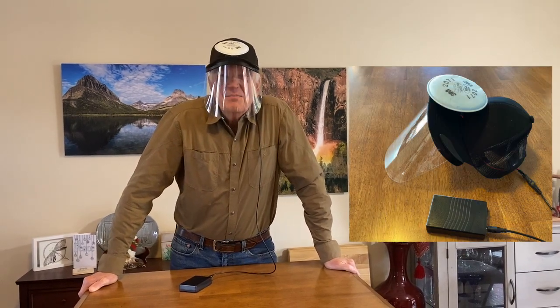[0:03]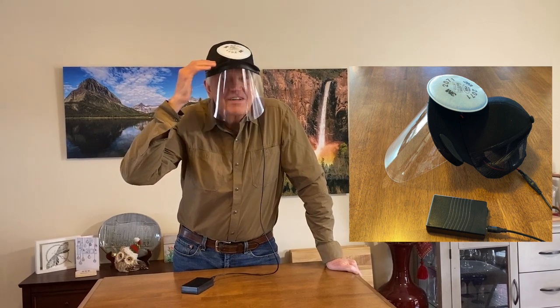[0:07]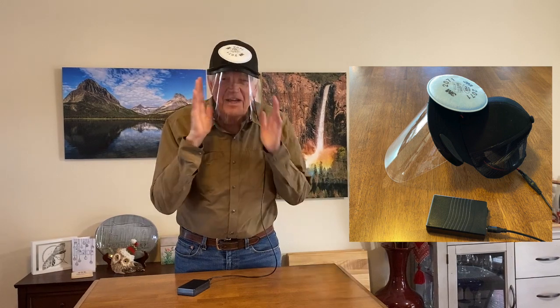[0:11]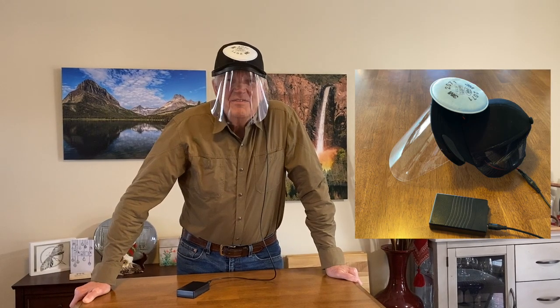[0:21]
Well, today I would like to show you a new ball cap design that includes a P95 filter, a fan that blows the air gently over your face behind a face shield and provides protection for our eyes, and also provides us with clean filtered air, hopefully to protect us more from this COVID virus that we've been fighting.
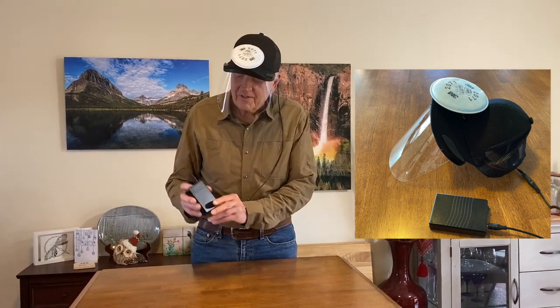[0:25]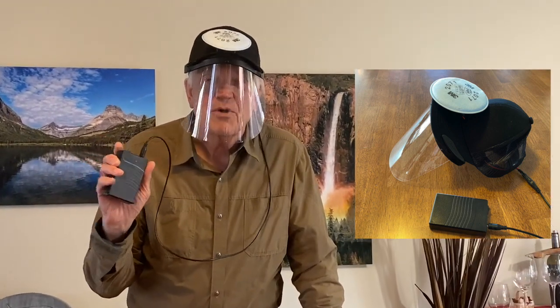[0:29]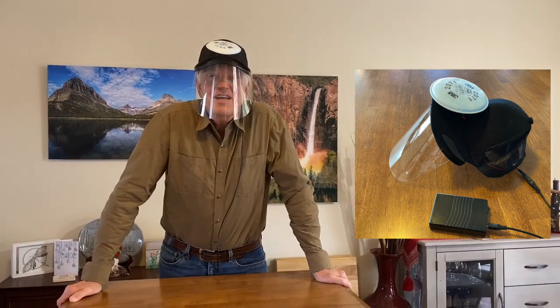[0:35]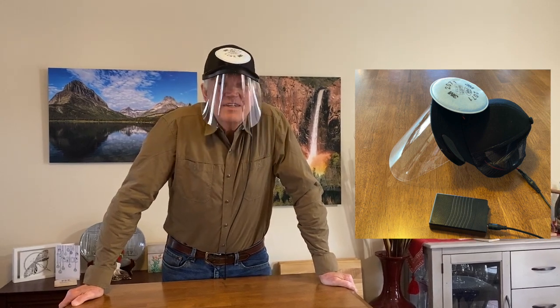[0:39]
It's also constructed with a 12-volt power pack that runs very quietly. You can fit it into your pocket and it will last all day, over 30 hours. If you'd like to learn how to construct one of these COVID caps, stay tuned.
All indications are that if we all wore a mask all the time and stayed 6 feet apart, we could probably cut down the spread of this virus. But not everybody feels comfortable wearing a mask, and you've all been in situations, I'm sure, where there are people that aren't wearing a mask, and you would probably like to be a little more protected.
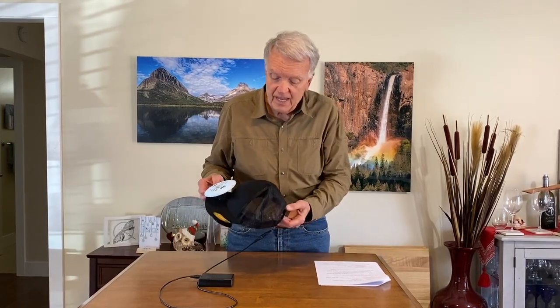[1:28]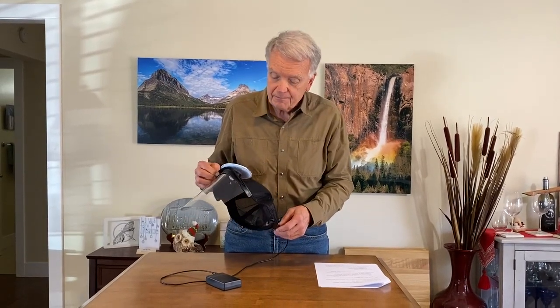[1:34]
And I think what we need is a source of clean, filtered air that can protect our breathing, and also protect our eyes, because research has shown that we can even get infected from COVID through our eyes. So what I'd like to show you today is a hat that I put together that will give us a source of clean filtered air.
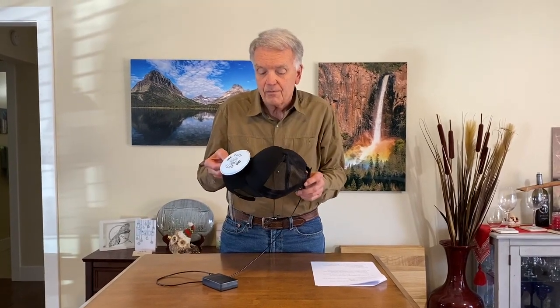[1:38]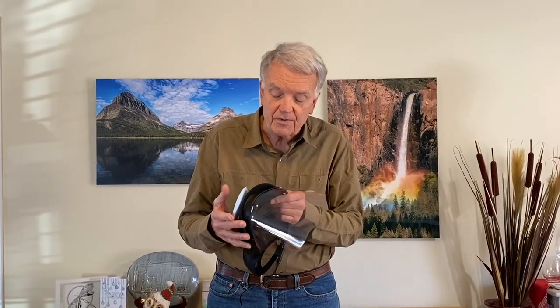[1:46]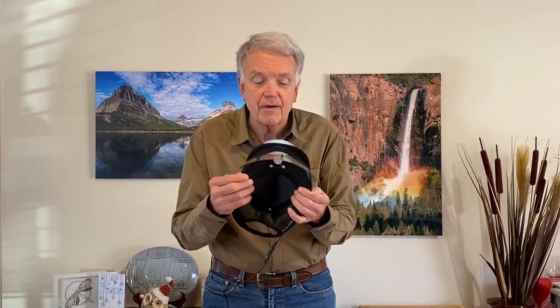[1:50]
This is a standard ball cap. Really, you could use any one to construct one of these. It's nice to have a brim on it, but all the brims are pretty much the same size, so that's fine. A hole is cut in the brim, and I'll show you how that's done later.
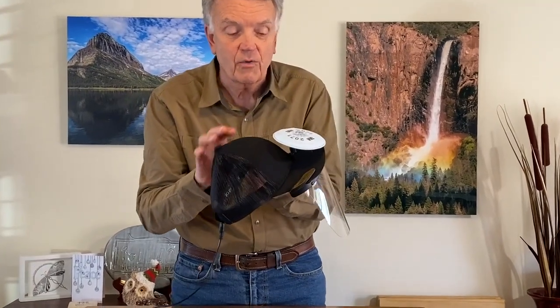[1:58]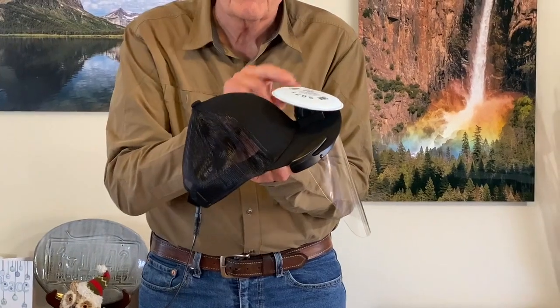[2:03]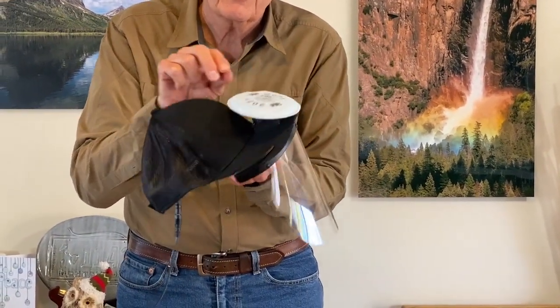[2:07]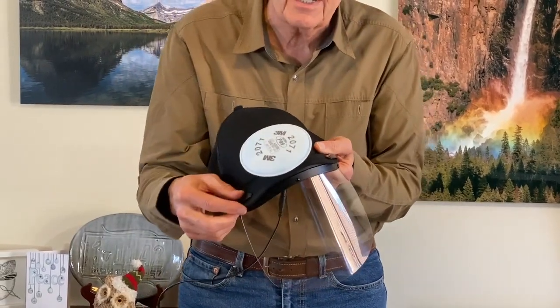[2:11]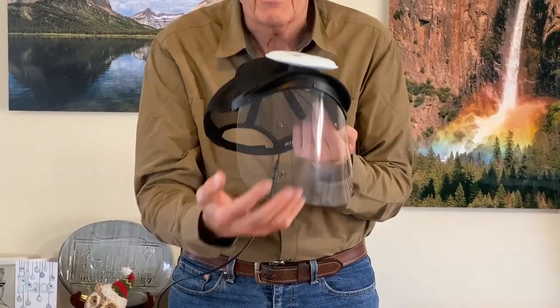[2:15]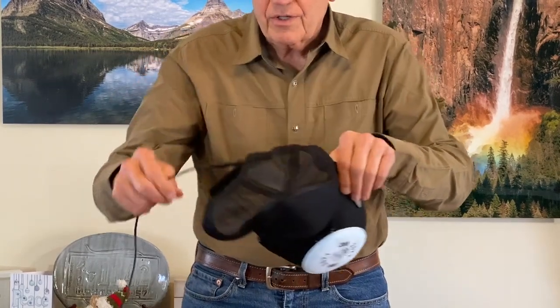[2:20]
And then on top of the brim, you can't see this right now, but I'll show you all the components in a little while, there's a little 12-volt fan, and connected to the fan is a little adapter that allows one to connect a filter. This is a 3M filter. This one is a particular P95 filter. And that then provides us with filtered air that comes down across our face. And I'll show you here.
You can put this on. This is just really light. It's just like wearing a ball cap. You really don't feel any different at all.
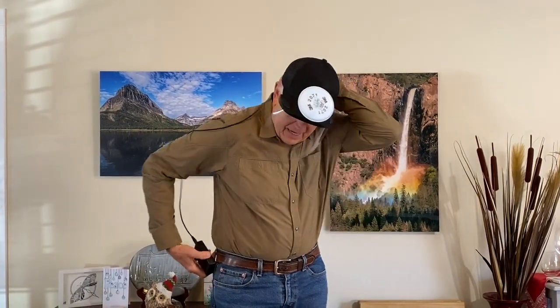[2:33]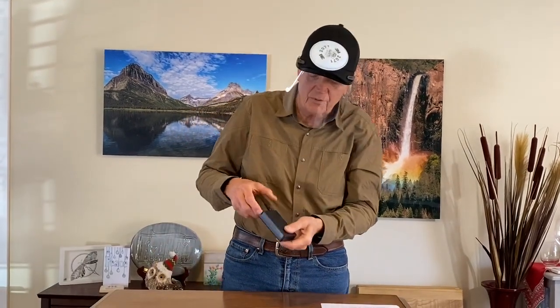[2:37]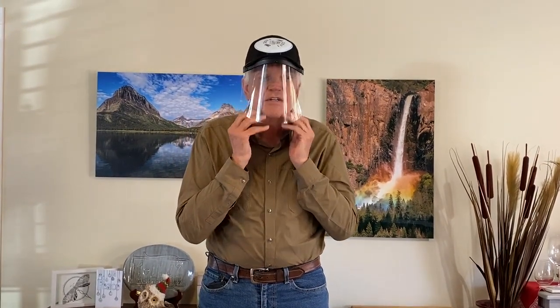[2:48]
And the back of the cap is connected to a cable, and that cable is connected to a power pack. It's a light, 12-volt power pack that fits in your pocket. And when you turn that on, you just get this source of air that comes across your face. You can feel it, and that protects your eyes as well. And you could even wear your cloth mask underneath and be even more protected.
Well, how well does this work? One of the nice things about this is if you've tried wearing a face shield with your mask or without your mask, you oftentimes will find that it starts to fog up. And with this air flowing, I have not seen any evidence of any fogging at all. I think if you went out when it was really cold outside, you'd probably have to have some heat provided to keep it from fogging. But just in an interior situation, it should be fine.
The amount of air that is provided by the fan is quite a bit. Depending on the filter, there's a couple filters available, it's twice or four times the amount of air that you need to typically breathe under a normal situation. And of course, it's not saying that there couldn't be some COVID that can get in. So I think you still need to be careful. It's not a total 100% protection. But certainly that fresh air that's flowing over your face is reassuring when you're in a situation close to other people.
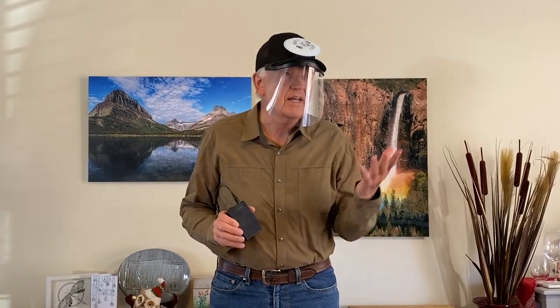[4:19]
This battery pack is commercially available as well. I'll show you where later. And this can run for 30 hours. So you can wear this mask running like this all day at your workplace or wherever you happen to be. If you're in air travel or on a bus, you're in the workplace, even teachers in the classroom, you can use this all day. And then the battery pack comes with a charger, so you can just charge it at night, and you'll be ready for your next venture out into the real world.
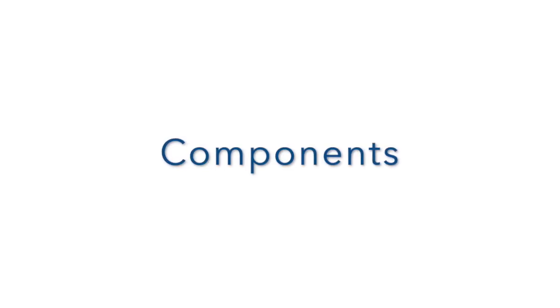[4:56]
Okay, in the next part of the video, I'm going to show you all of the components that go into making one of these. And then if you want to, I'll show you how the construction is actually done.
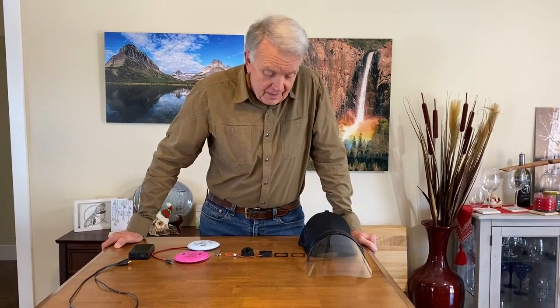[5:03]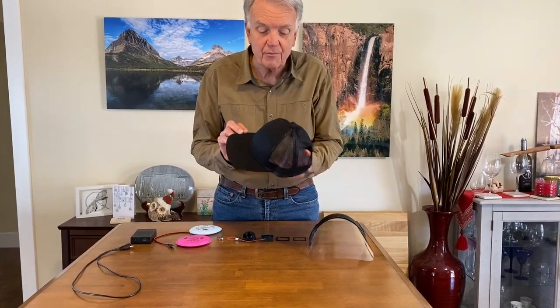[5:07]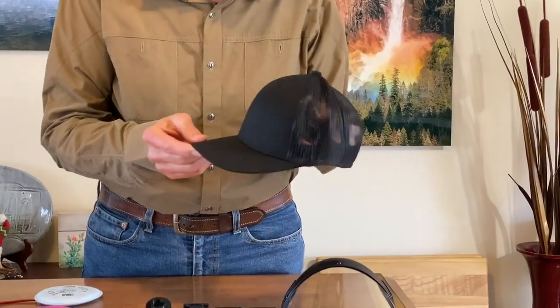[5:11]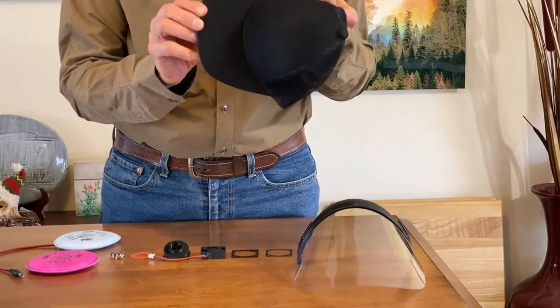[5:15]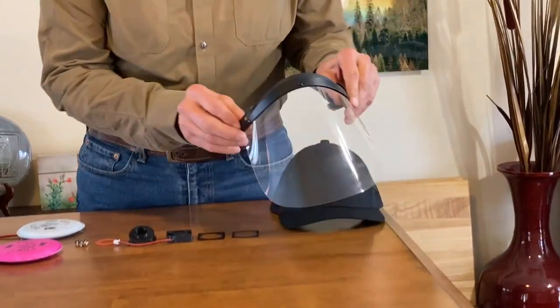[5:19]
Okay, let me show you all the components that are used to make this COVID cap. Of course, you need a ball cap of some sort. Doesn't make any difference, it can be in color, as long as it's got a brim on it, that's the standard brim, it should work fine. I do have a face shield.
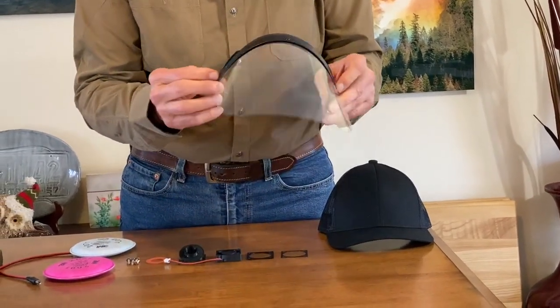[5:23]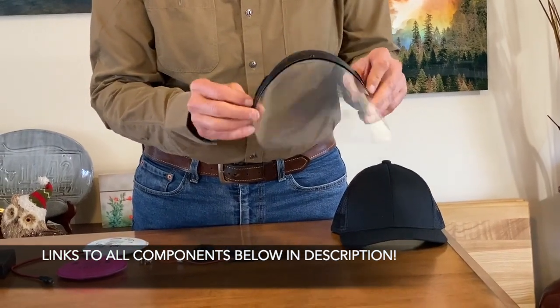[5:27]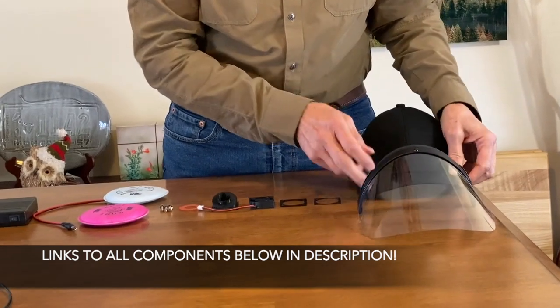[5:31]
This is a face shield that's by CapLens. It's commercially available, but there are a lot of face shields out there you could use, but this one seems to slide on the rim of the cap really nicely. And then
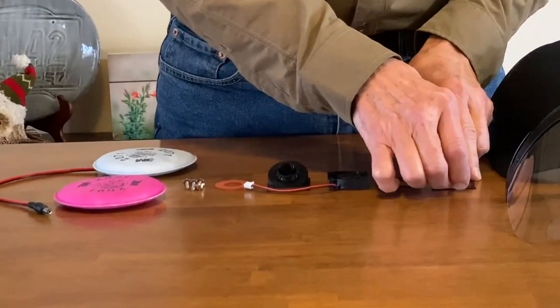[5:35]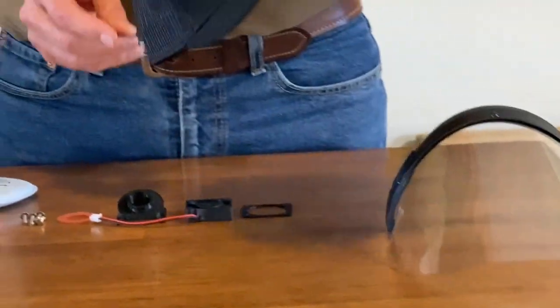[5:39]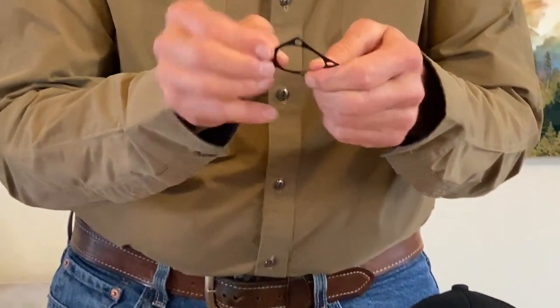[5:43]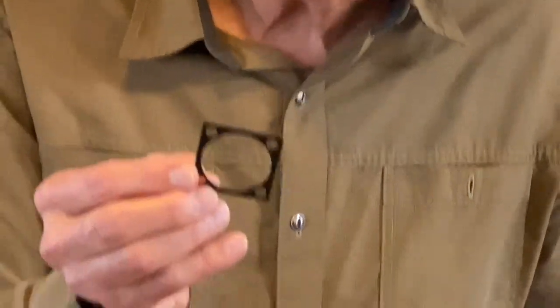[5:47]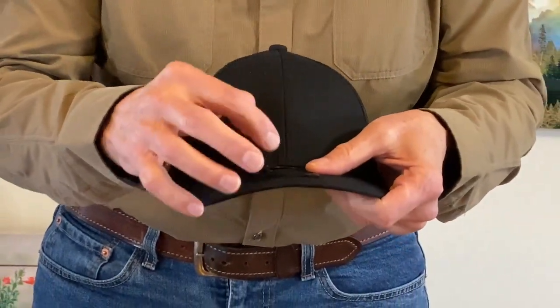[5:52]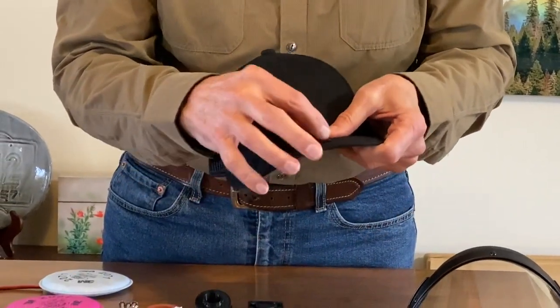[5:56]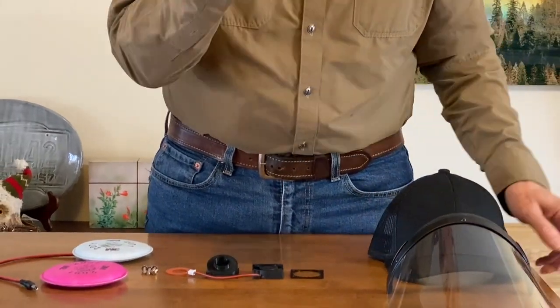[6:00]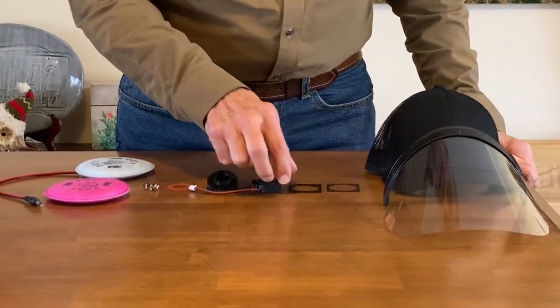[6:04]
I have to cut a hole in the cap. So with the 3D printer, I just printed up a little flexible template that I can put on and hold on the top of the cap to mark where I want to cut a hole in the cap and where I want to punch some holes for the screws. It's not needed, but it just makes it a little bit more accurate and easy to do.
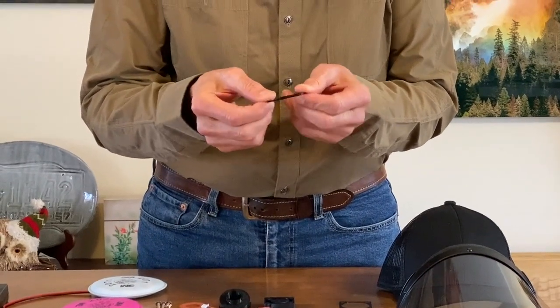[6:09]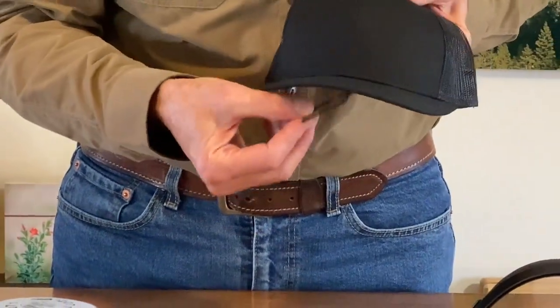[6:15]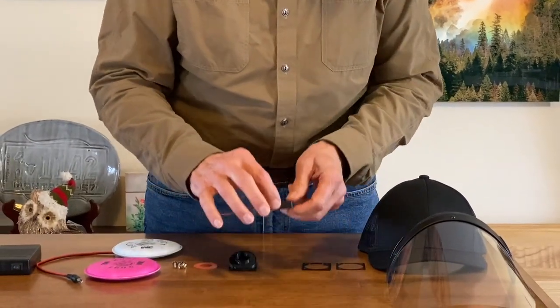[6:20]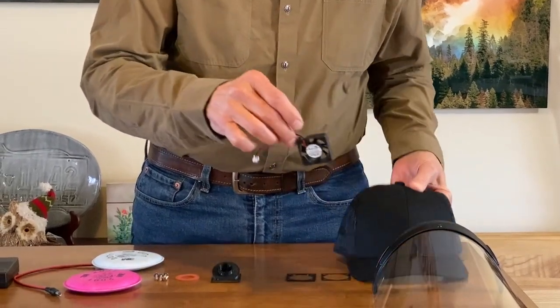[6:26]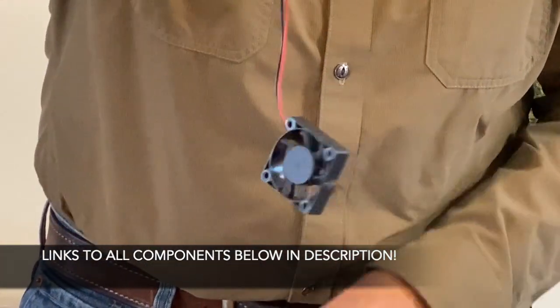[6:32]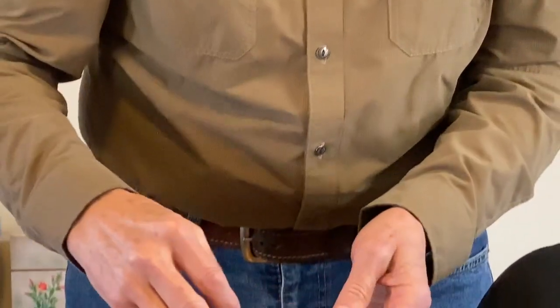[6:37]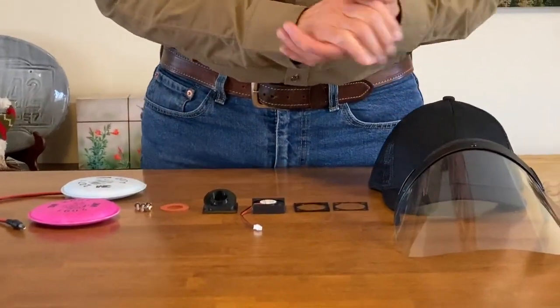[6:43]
And then this piece here is also printed on a 3D printer. And this goes on the bottom of the lid, where the hole is. And then on top of the lid, top of the brim, goes this fan. This is a fan that you can buy on Amazon. It's a little 12-volt fan and delivers enough air so that even with the filter, which slows down the air, it delivers 2 to 4 times the amount of air that you need to breathe normally.
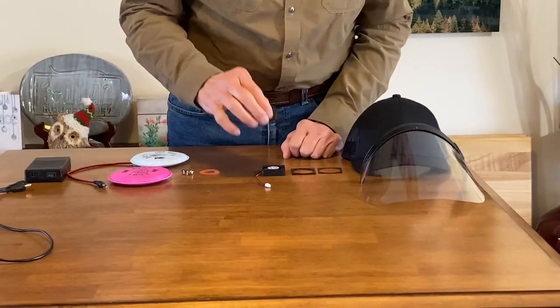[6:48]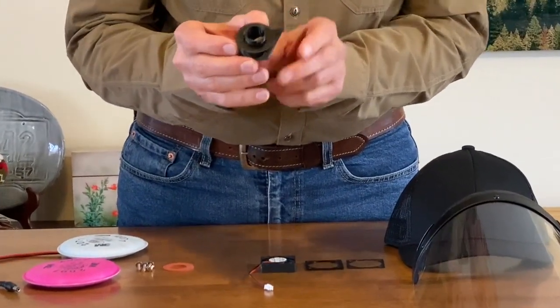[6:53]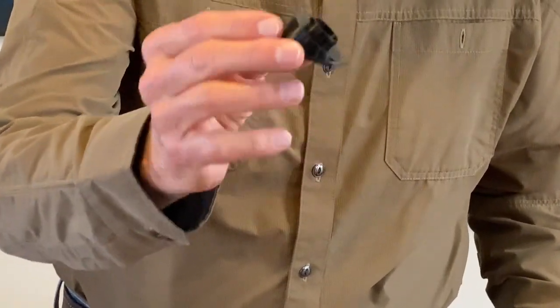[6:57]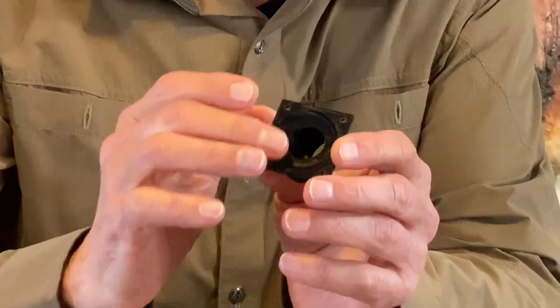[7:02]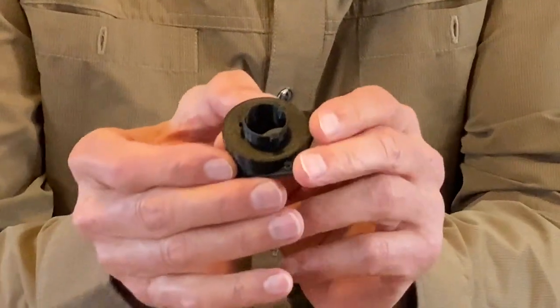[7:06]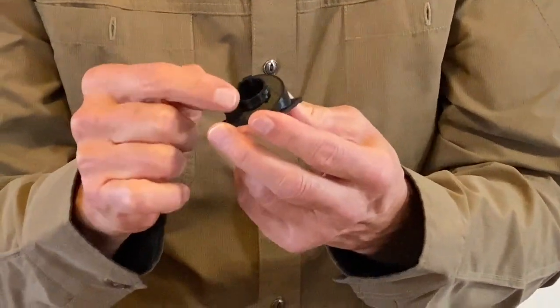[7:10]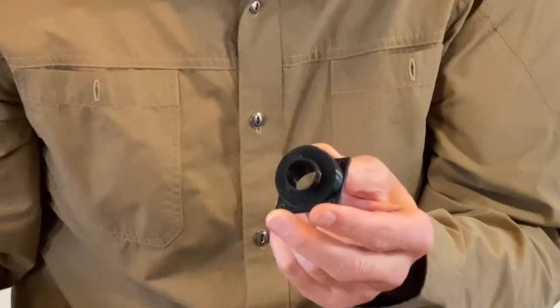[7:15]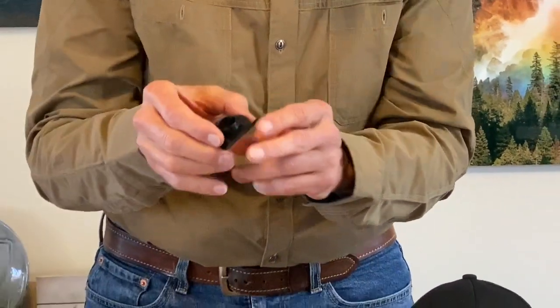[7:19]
And then on top of the fan, there's an adapter. This is a little adapter that I printed up on the 3D printer. There's where the air comes out. And this top here is where the filter attaches. I went on to one of the 3M masks and copied the location of the little tabs that they have on there that allows the filter to attach to the adapter.
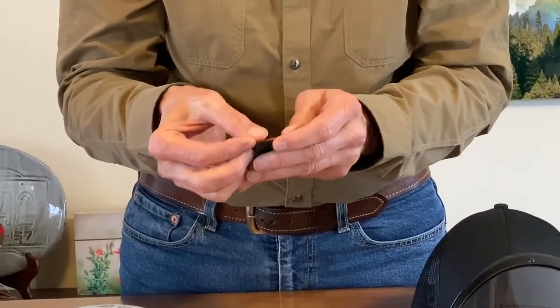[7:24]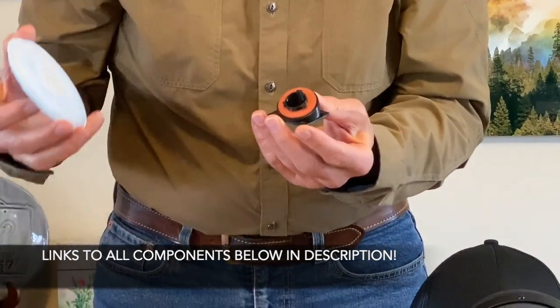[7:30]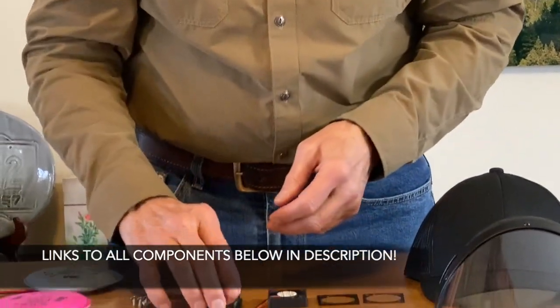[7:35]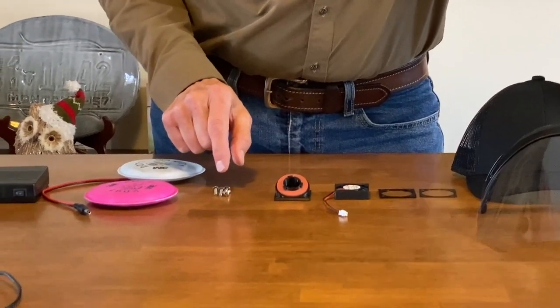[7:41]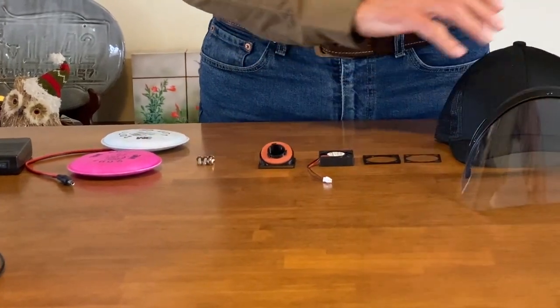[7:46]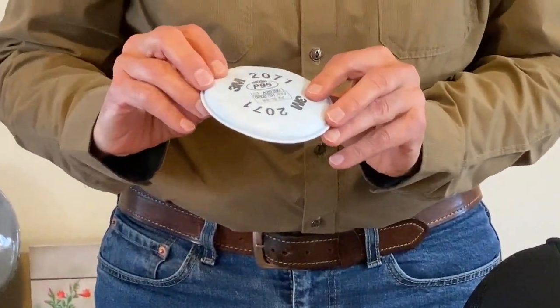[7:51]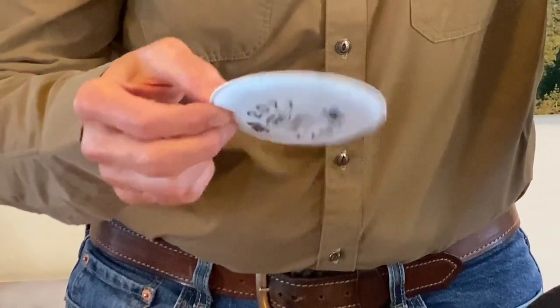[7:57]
And then there's a little gasket that 3M makes also that you can buy on Amazon. And that allows either of these two filters to attach, just slips on and turns. And of course, then there are 3 or 4 screws. These are 6-32 screws, 3/4 inch long, and they will hold all these things together on the cap. The two filters that I've found, 3M may have some additional ones, are very lightweight, less than an ounce, hardly anything at all.
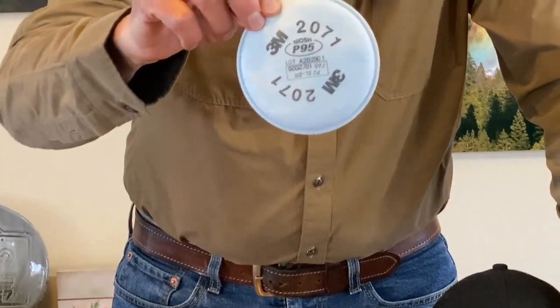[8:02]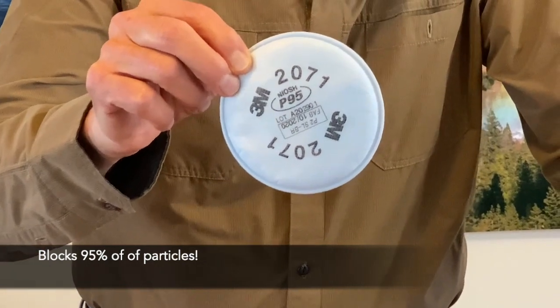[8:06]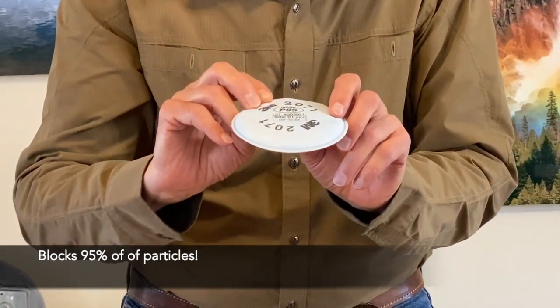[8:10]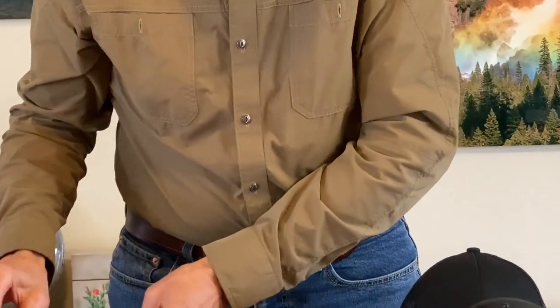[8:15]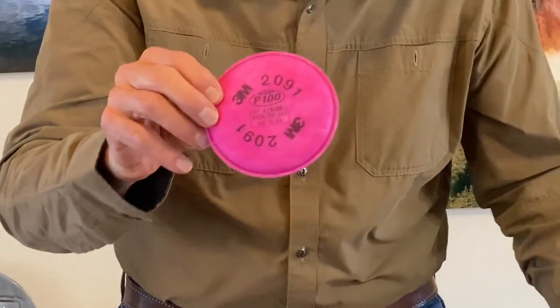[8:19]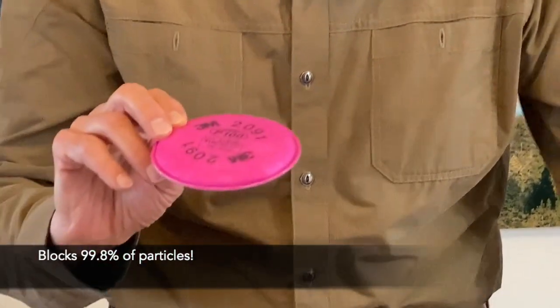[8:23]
And this is a P95. It filters 0.3 micron particles. 95% of those are filtered out. And here's another option in a different color, which is the P100. And that blocks 99%, 99.8% perhaps of the particles.
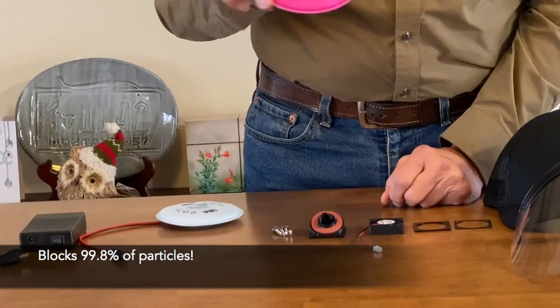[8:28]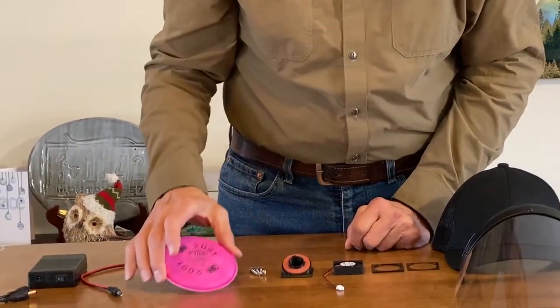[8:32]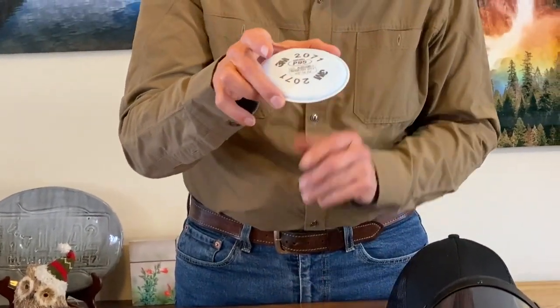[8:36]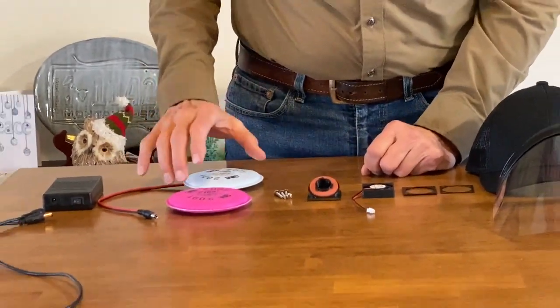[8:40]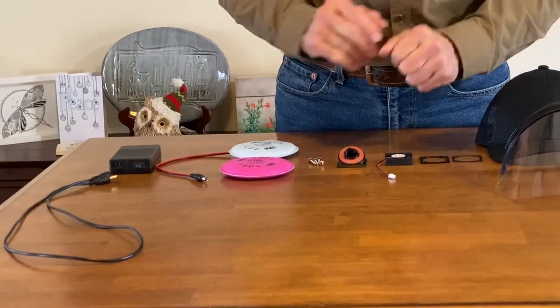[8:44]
But this one doesn't flow as much. This only gives us about twice the amount of air that we breathe with this setup. This gives about 4 times the amount of air that we breathe. So I don't know exactly which one would be the best, but until we do, you maybe just find that you like one color more than the other.
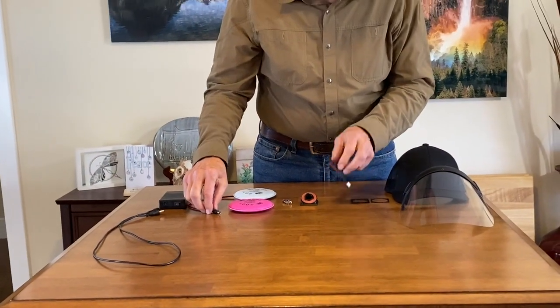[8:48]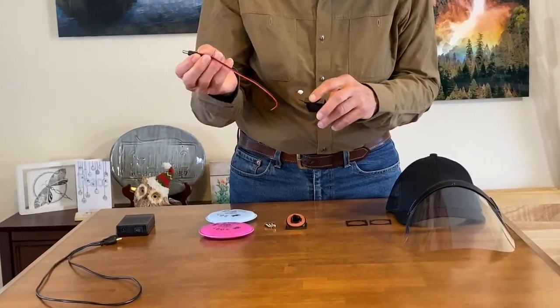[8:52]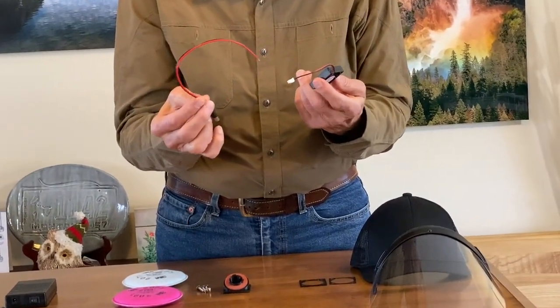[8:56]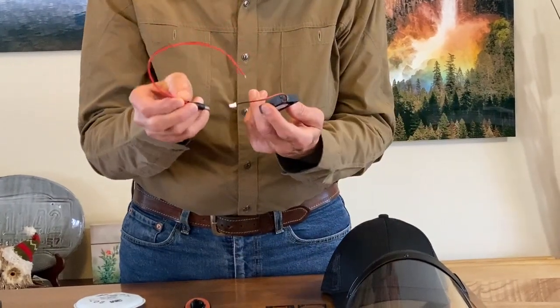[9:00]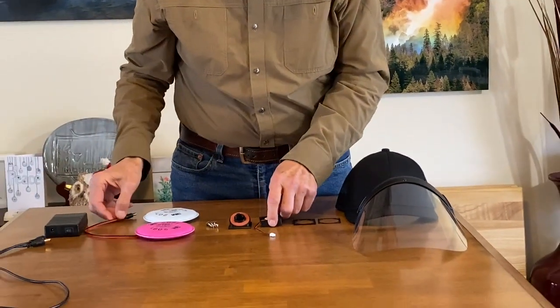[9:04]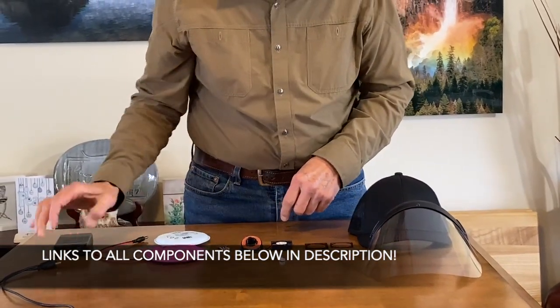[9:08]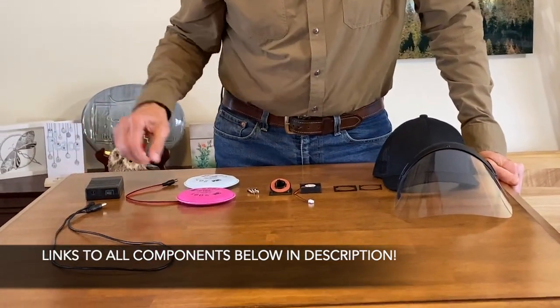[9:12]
And then, of course, the fan has to be connected to the power somehow. I'll show you in the next part of the video how I do this. But this plug is routed in the cap, and then I just solder those wires together. And then, of course, the battery pack that we talked about already, and a 3-foot cable that allows us to connect that to the plug at the back of the hat.
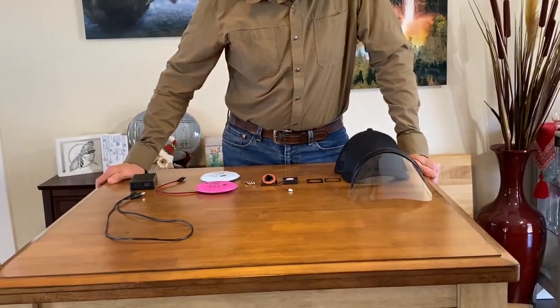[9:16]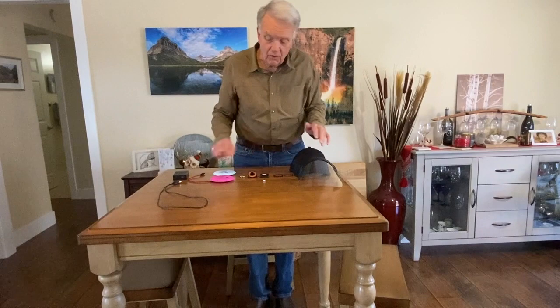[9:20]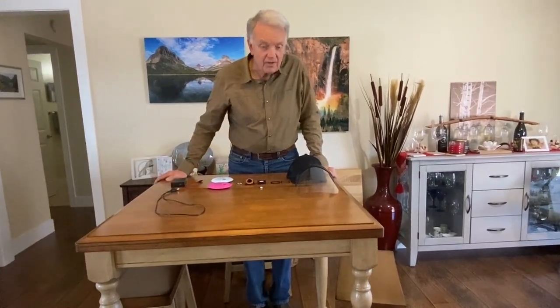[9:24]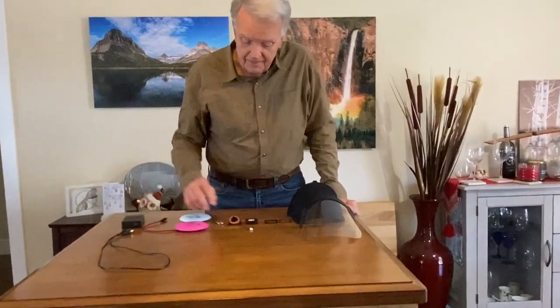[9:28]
Okay, in the next part of the video, I'll show you how I cut the hole in the cap and line it up and put everything together and solder the wires in case you want to do some of that.
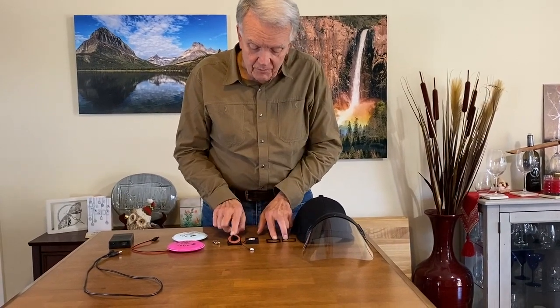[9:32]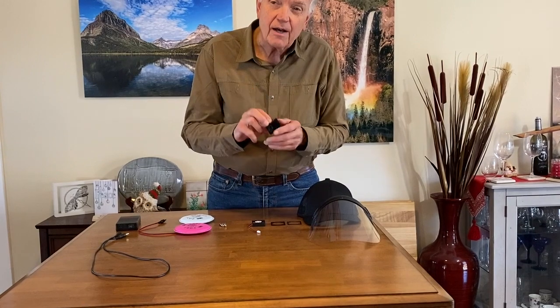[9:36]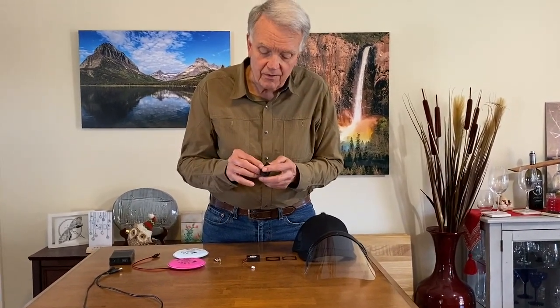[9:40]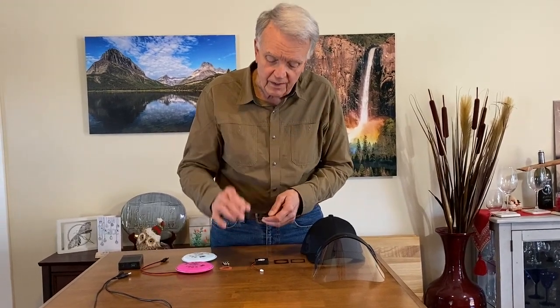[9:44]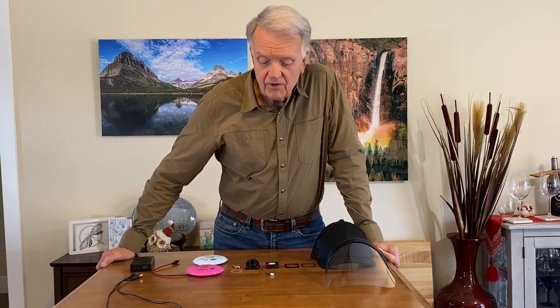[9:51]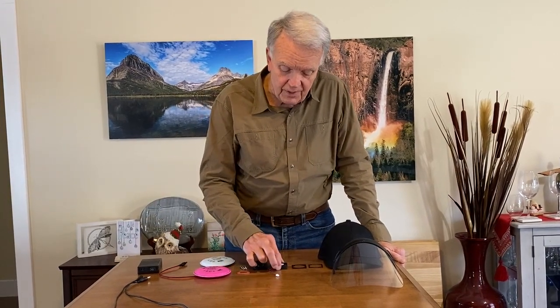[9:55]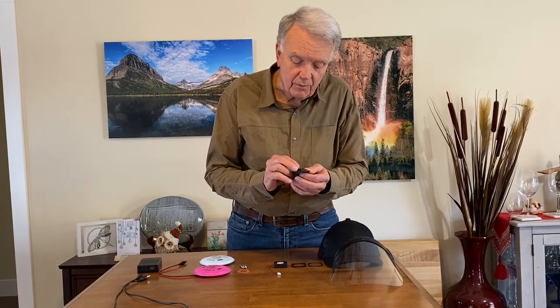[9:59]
These three items right here are made on the 3D printer, and if you haven't seen a 3D printer working before, I'll show you an example when I'm printing one of these up so you can see what it's like. You may know somebody that has a 3D printer, or there may be some place where you can have things printed up. I'm not sure. I'm new to 3D printing myself, so I don't know everything that's available.
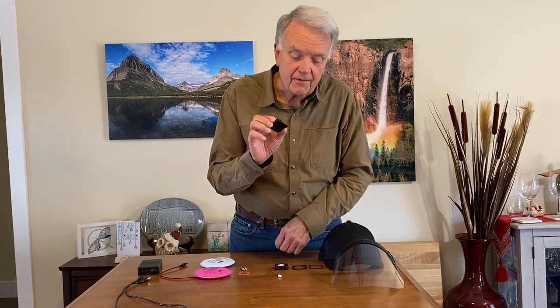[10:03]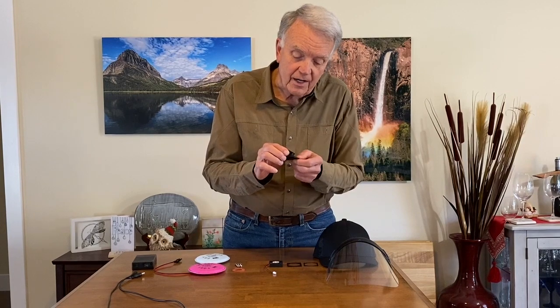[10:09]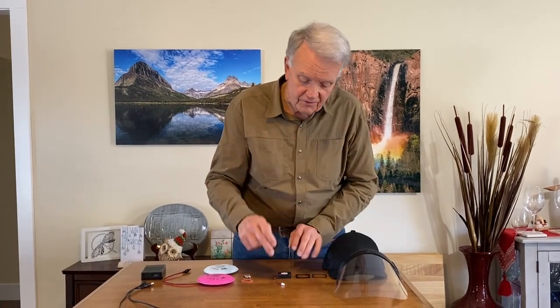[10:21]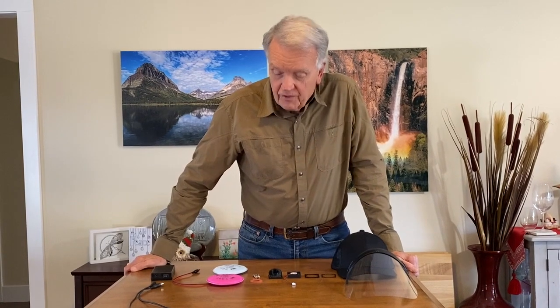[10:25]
But if you've been doing some 3D printing or you know somebody that does it, they will know what I mean when I say there is an STL file, and I can post the STL file in the description below, so that if you want to print up one of these components, or if you want to have somebody print up those components, you can use that STL file to do that.
Okay, in the next part of the video, then I'll show you how all these are put together to make the cap.
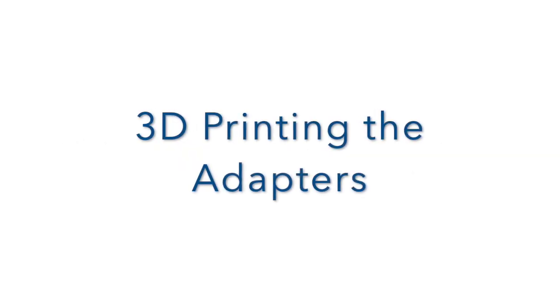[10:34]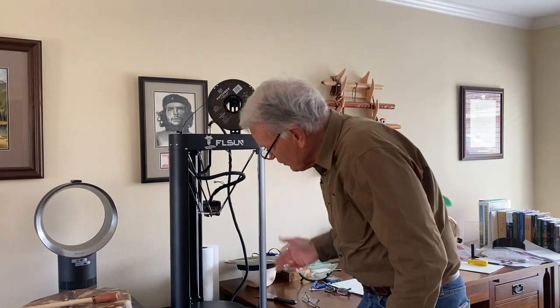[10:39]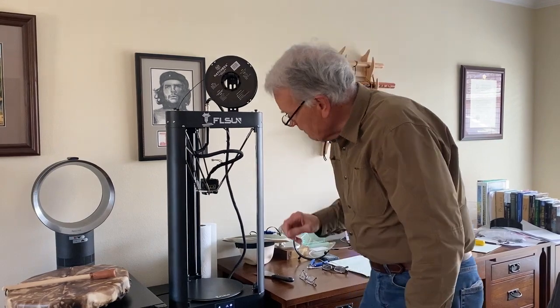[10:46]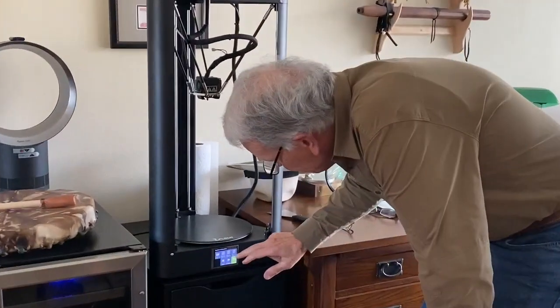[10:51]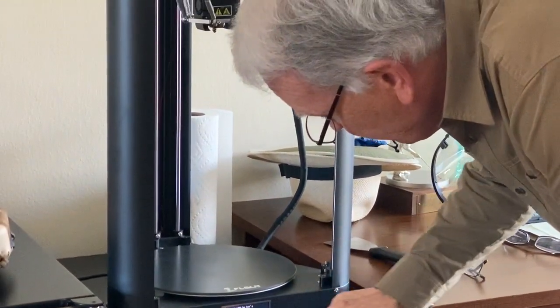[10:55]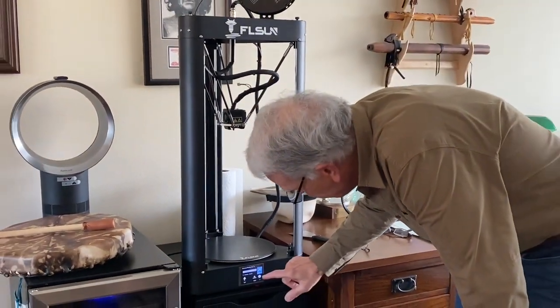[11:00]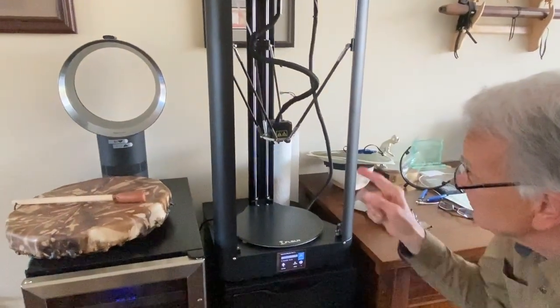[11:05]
Okay, let me show you just a short amount here of one. This is a 3D printer that I just bought within the last year. I'll just show you a little bit about this if you've never seen one of these. And I'll just start. I'm going to print up one more of these adapters. And so I'll let this heat up. This is going to start heating up and take a while. Okay, now it's going to come down and it'll start printing.
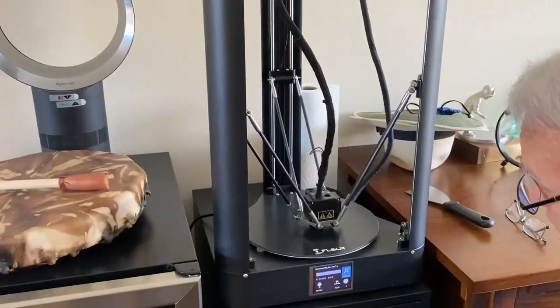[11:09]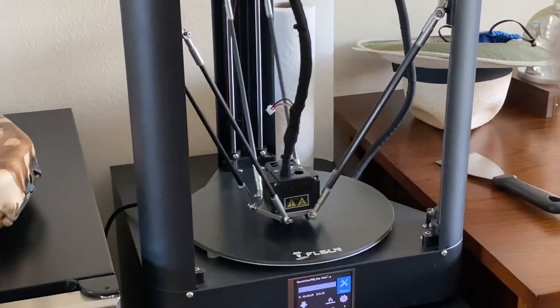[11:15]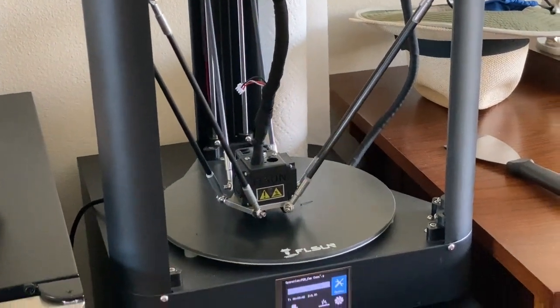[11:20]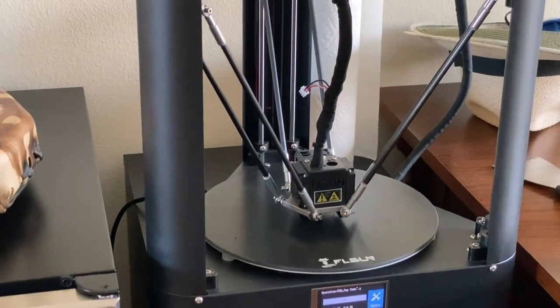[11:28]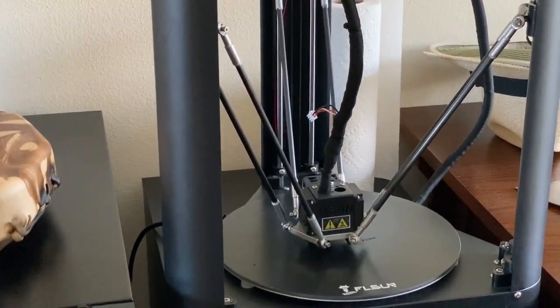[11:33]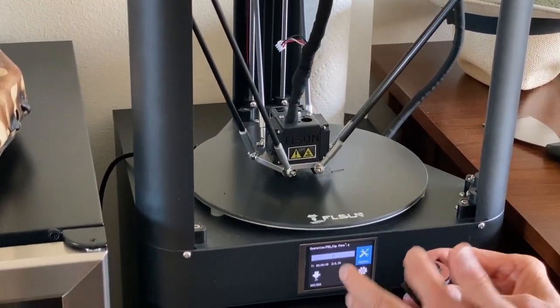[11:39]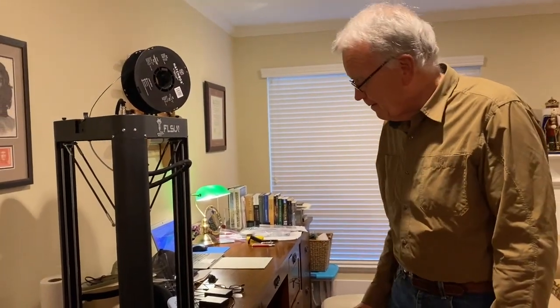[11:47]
And this is using the program on the inside just to print up the piece. What it's printing right now are one of these little adapters. And that'll take probably about 2.5 or 3 hours to print that up. And this actually will print it up at an angle like this. So there'll be some support structure down below, but I wanted to have this be vertical for the accuracy of the print.
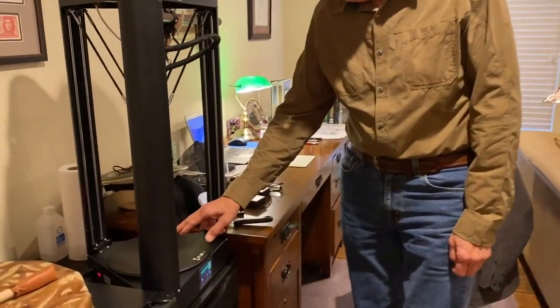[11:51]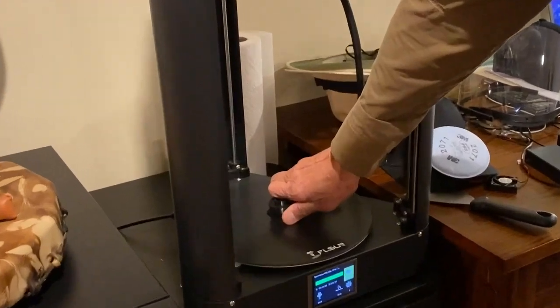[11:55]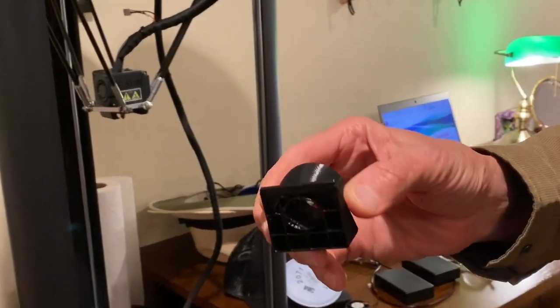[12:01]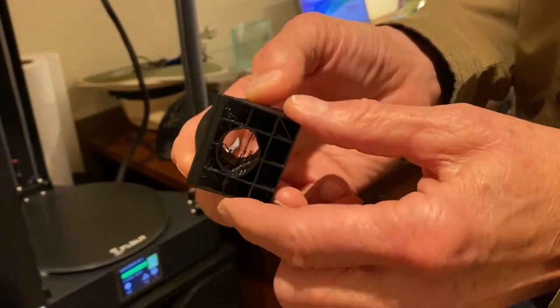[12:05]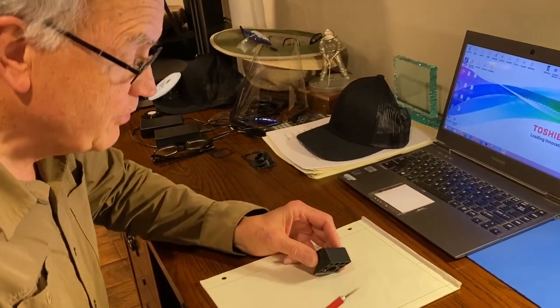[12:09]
Okay, so we've been printing this piece. Let me take this piece off right now. You can see it right here. And sometimes they're loose enough you can just pull them off like that. When this cools down, they come off pretty easily. And so you can see the piece that we want is there, been printed. It's got some support structure underneath, and let's take that off.
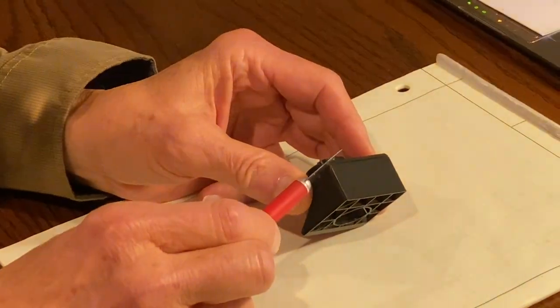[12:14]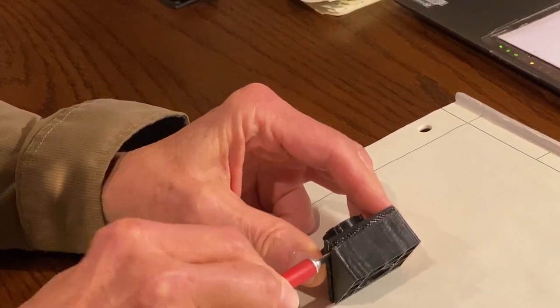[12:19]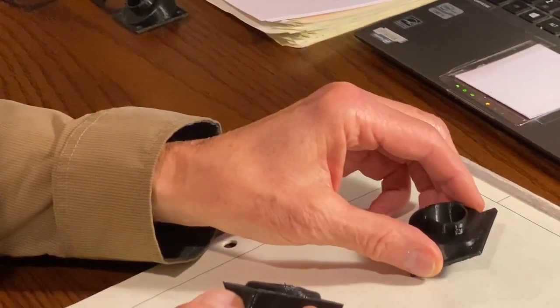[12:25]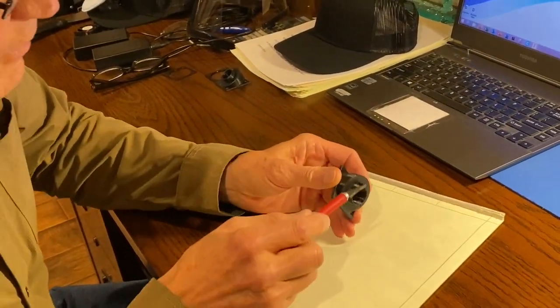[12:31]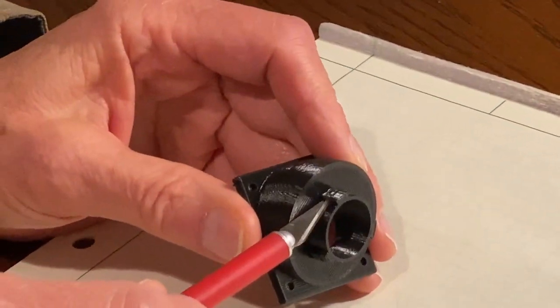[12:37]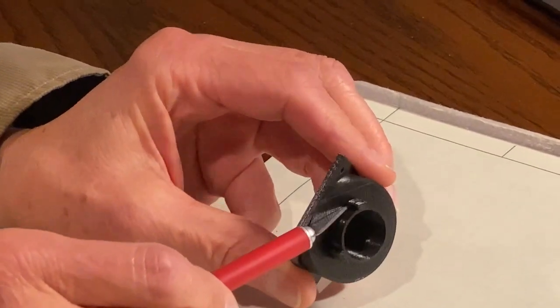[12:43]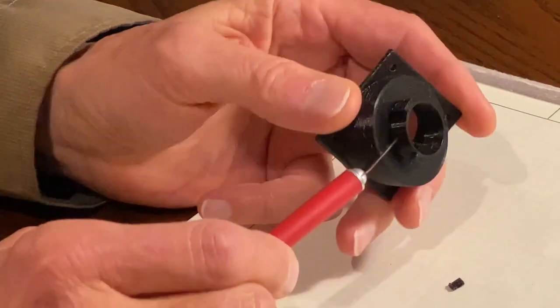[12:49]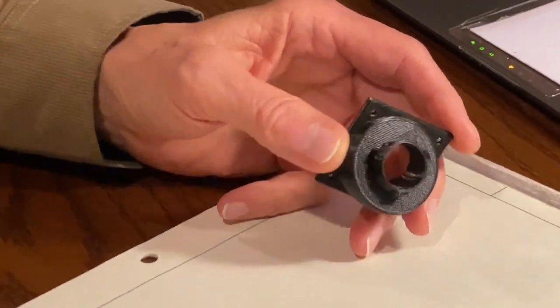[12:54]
Okay, we have this piece, and let me just try to take off this support structure. I just got an X-Acto knife here to give a little flexing in it. And that just pops off. And that's what kind of supported it when it was being printed. And if you look real close here, you'll see that there's little support structures in here that pop off. I'll pop those off. That's kind of where the filter will go underneath and be held in place. Okay, so that is pretty much ready to go.
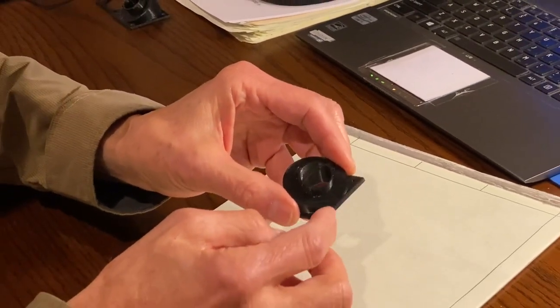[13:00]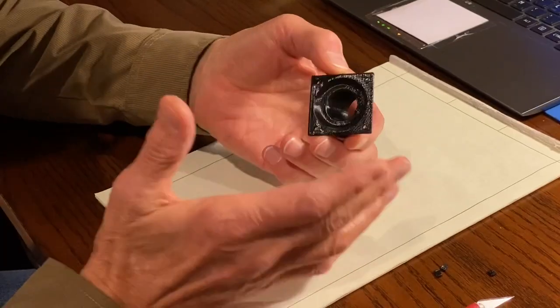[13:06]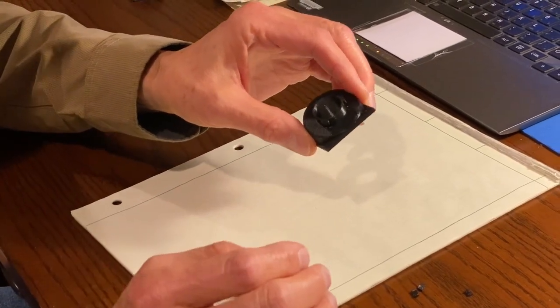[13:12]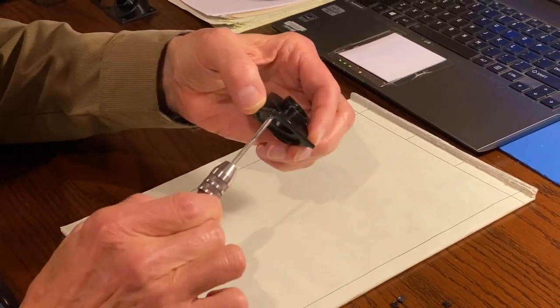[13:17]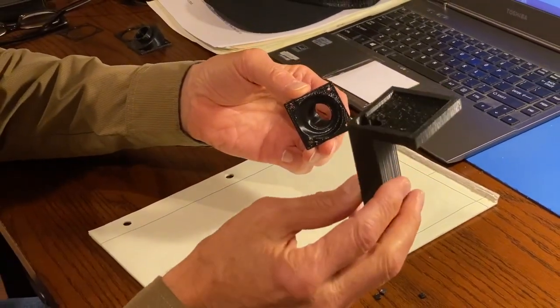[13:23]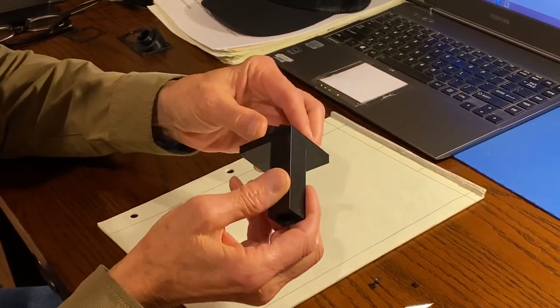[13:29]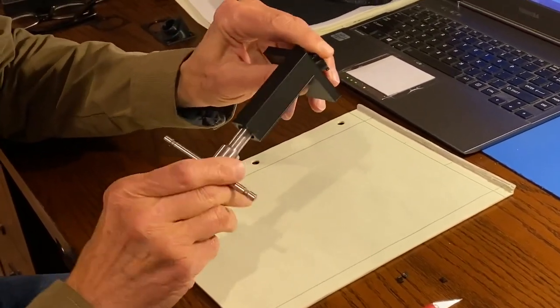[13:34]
The one thing is that we need to have tapped holes so that the screws will hold it all together. It turns out that you can write the program in such a way that you put tapped holes in there, but they don't really come out as well as if they're really tapped with a real tap, and so I do that. And you can tap these just by hand like this, but since I'm doing a lot of these, I just made up a little support structure to hold the taps in the correct direction, nice and perpendicular to the surface.
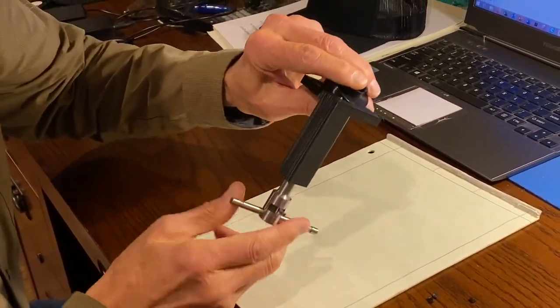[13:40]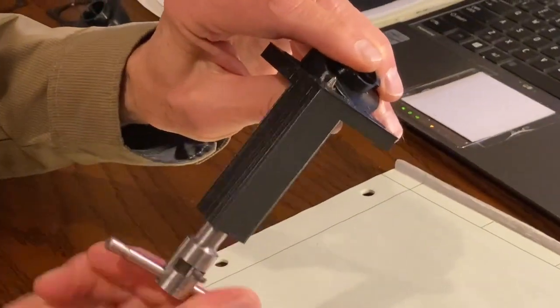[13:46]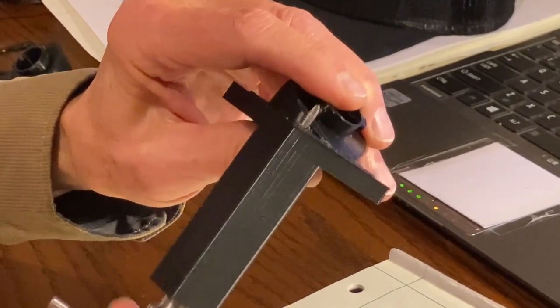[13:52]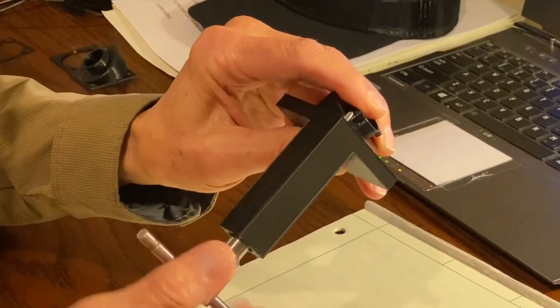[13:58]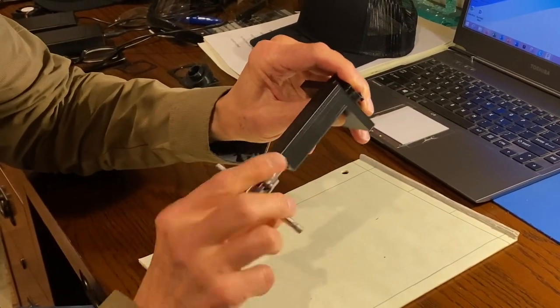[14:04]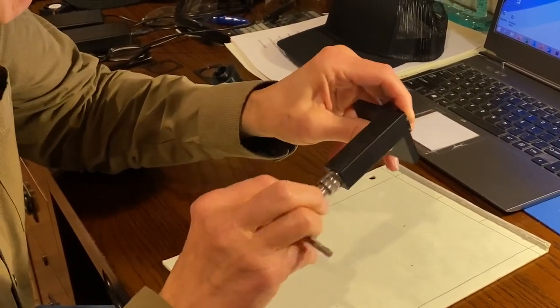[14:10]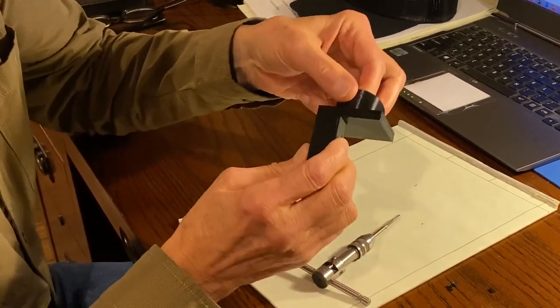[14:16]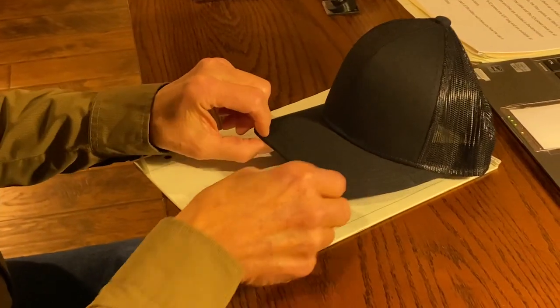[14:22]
And so we can just put it in and this tap can go. And you'll see the tap coming through the plastic there if you look real carefully. And I usually go in around 20 turns or so. And there's a tapped hole. And of course, we want to tap all four. So once this is out, I'll take this around, tap that after the next one, tap that after that, and I have all four tapped.
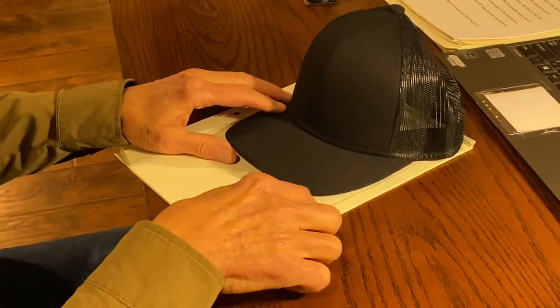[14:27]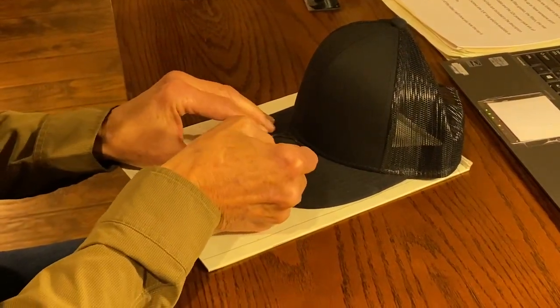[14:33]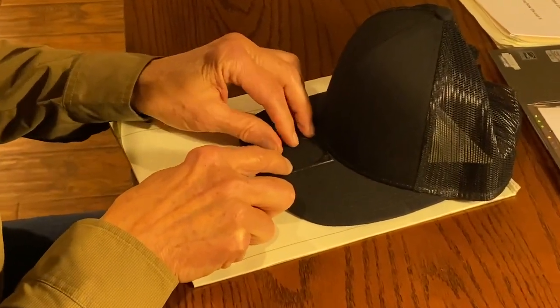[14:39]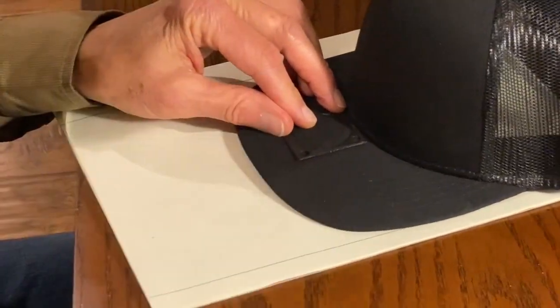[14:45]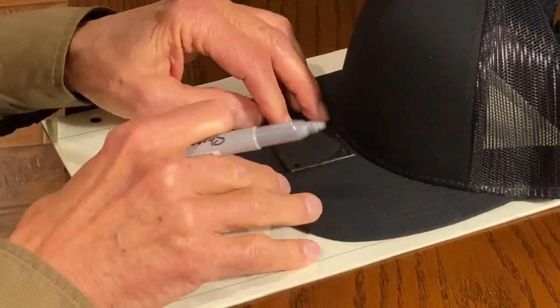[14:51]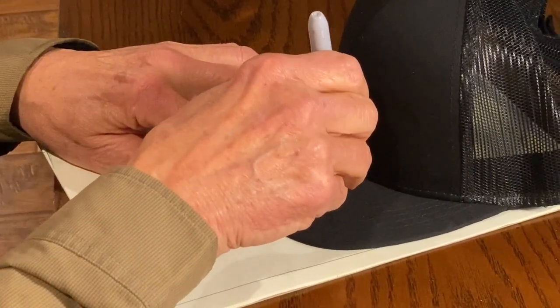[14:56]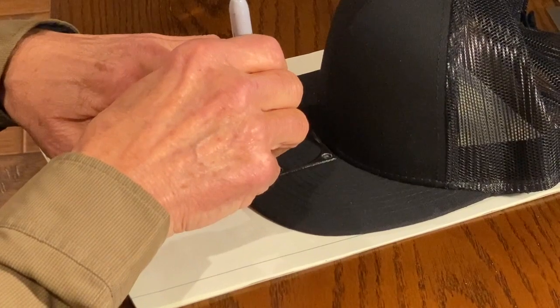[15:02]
Okay, so let's get started on the hat. And so what I'm going to do is take the hat. I've got this little template that I printed up, and I'm just going to put that about in the center and kind of look to see if it's square, and then I'm going to pull that off, and so that looks pretty good. And then this is just a silver marker, and so that'll just kind of show me where I'm going to punch the holes for the screws.
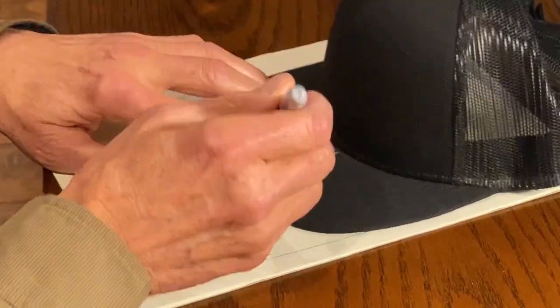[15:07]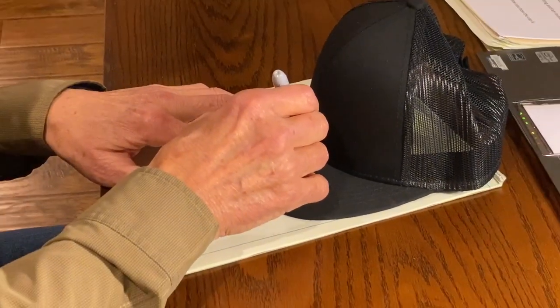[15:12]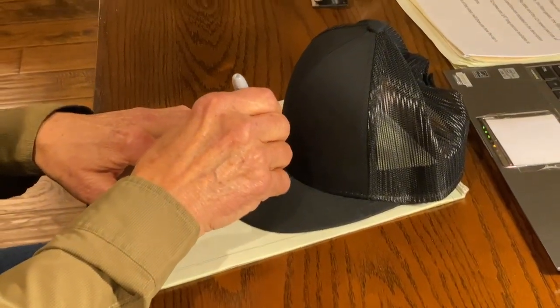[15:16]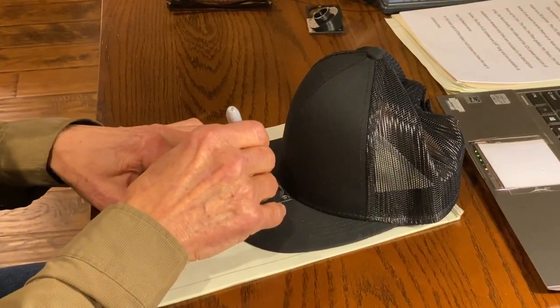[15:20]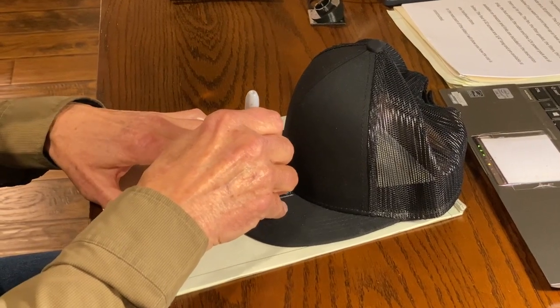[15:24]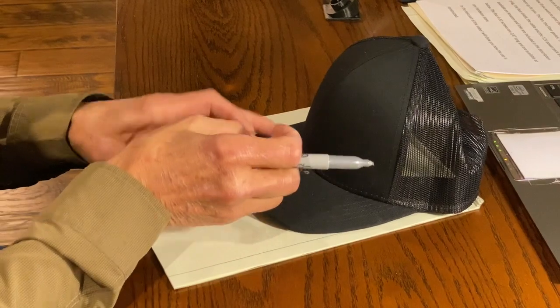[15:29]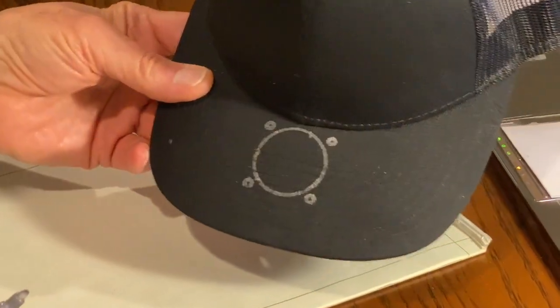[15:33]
Usually I use a dark magic marker, but these hats are black, so this particular hat, we've done it on lighter colored hats, and I just use a black magic marker. And this will show me where I want to cut the hole out. Let's take a look at what we got there. So that's what it looks like. Okay, so let's go out in the garage and we'll punch some holes.
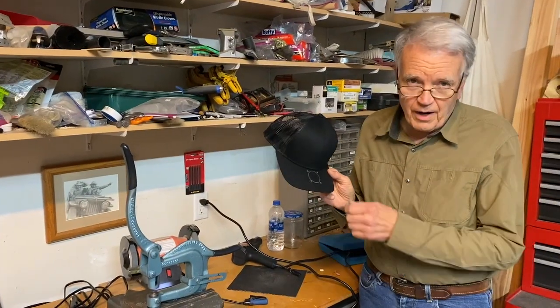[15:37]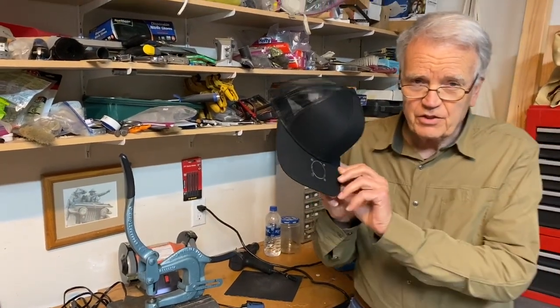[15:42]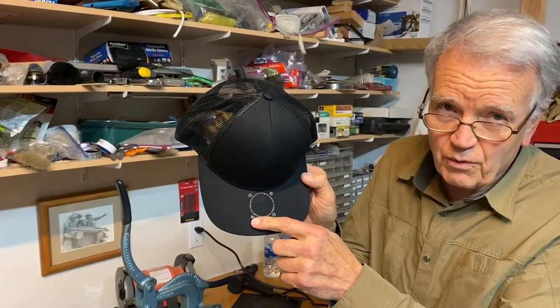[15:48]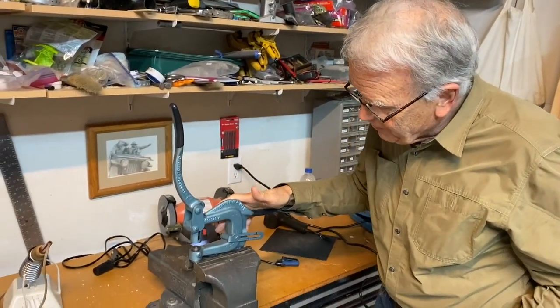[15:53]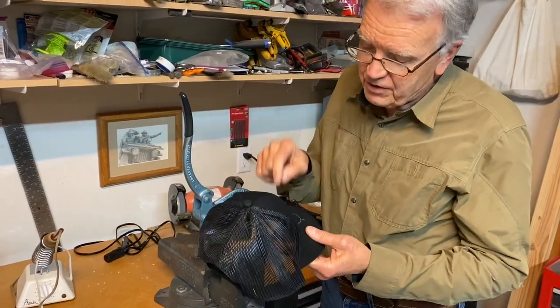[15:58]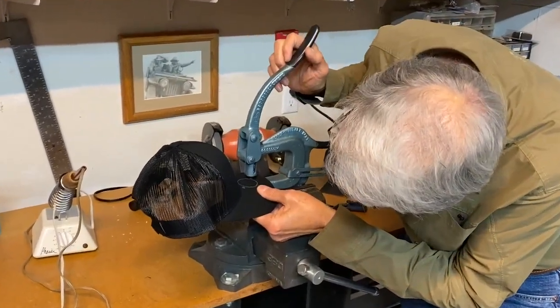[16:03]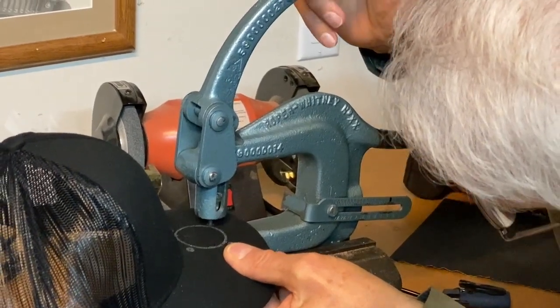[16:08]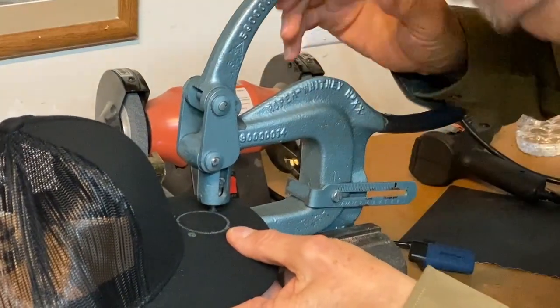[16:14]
Here we are out in the garage. We're going to be punching some holes in the hat. And I'm going to show this hat a little bit to you. You can see where the holes are going to be punched. Actually, I punched one hole already, and now I'll show you how I punch these holes. I use this punch that I just happened to have to punch the holes, but you could be punching these holes with a little hammer punch as well, I'm sure. And so I just line it up where the silver mark was that I put on. And just check with the light and make sure it's pretty centered. I'm going to move it over a little bit.
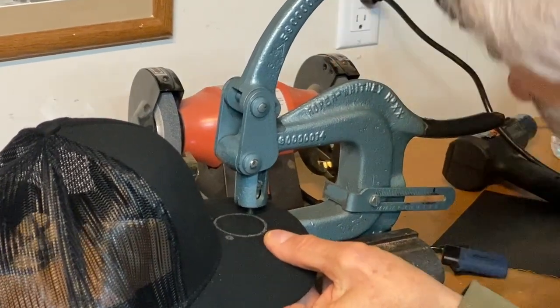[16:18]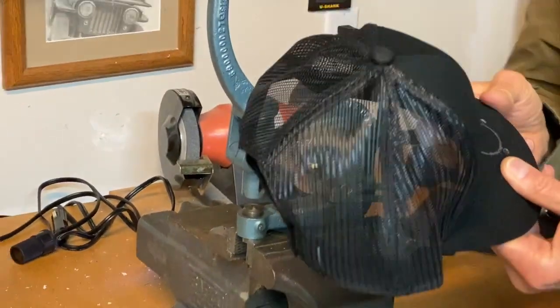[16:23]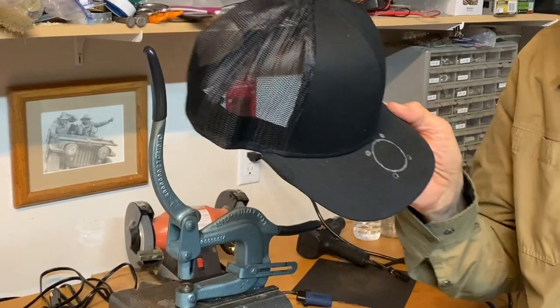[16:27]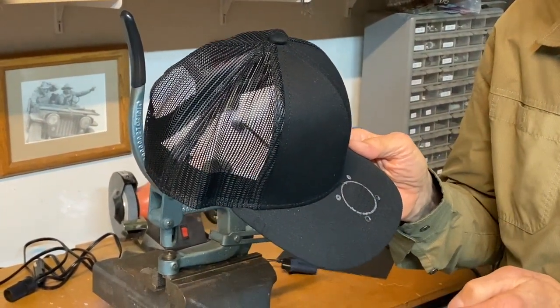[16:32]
That should be fine. And then I just punch the hole like that. And so now I've got two of those holes punched. I'll go ahead and punch the other two holes and I'll meet you back inside and we'll start cutting out this part where we're gonna have the fan.
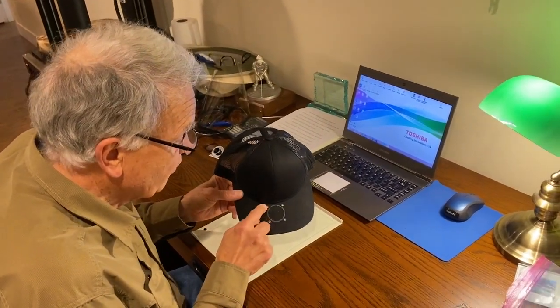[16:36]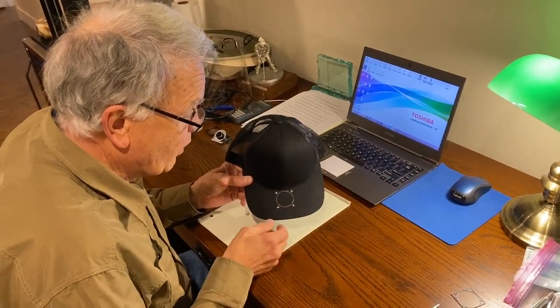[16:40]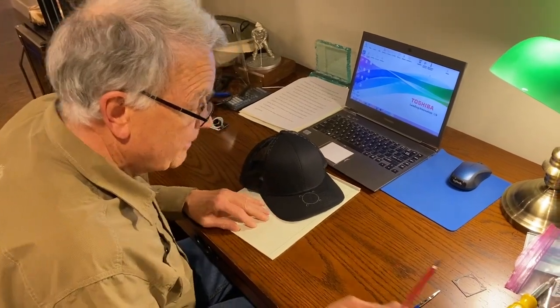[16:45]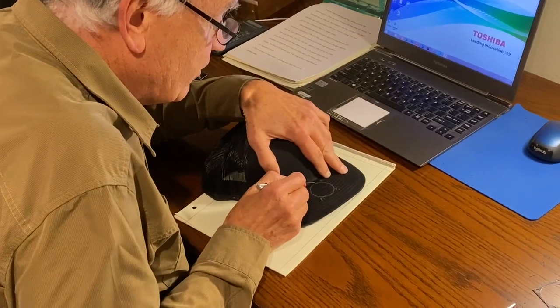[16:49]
So here we are. We've got the four holes that we punched out in the garage. Now we have to cut out this hole where we're going to have the clearance for the fan. So I'm going to do that with the X-Acto knife. And all I'm going to do is just follow this.
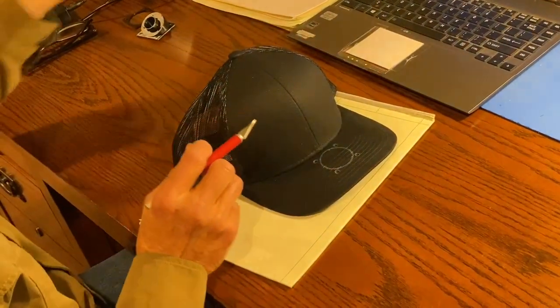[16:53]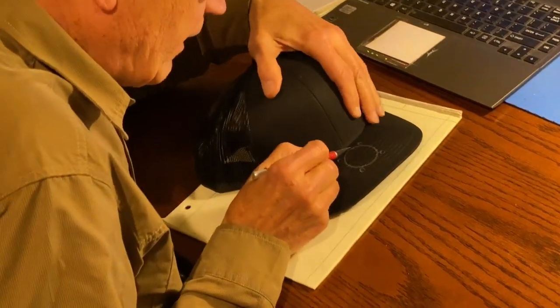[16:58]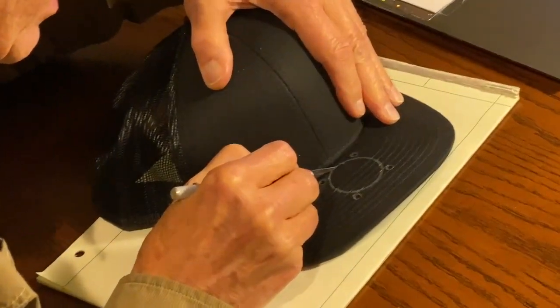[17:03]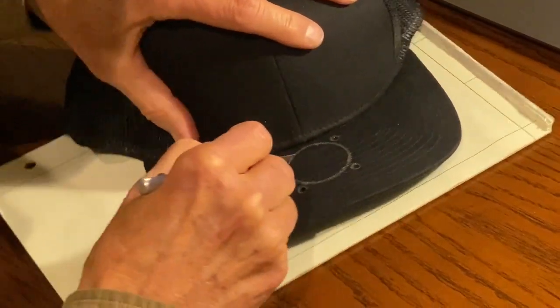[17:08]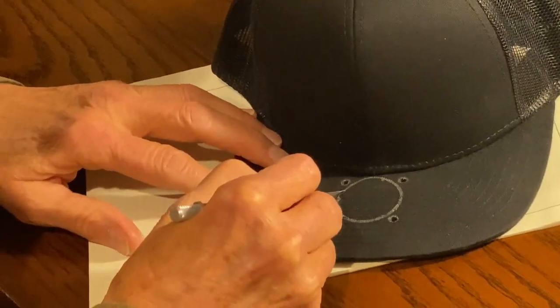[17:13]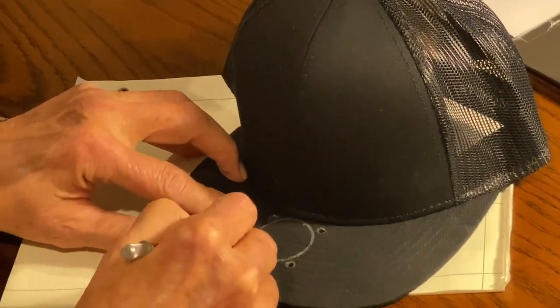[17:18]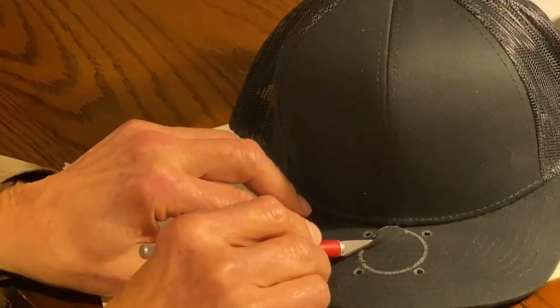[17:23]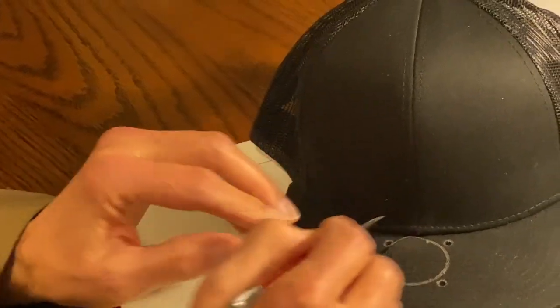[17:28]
Let me get some stronger glasses on so I can see a little closer. So I don't know if you can see this very well. I'm just going to use this X-Acto knife just to cut through the cloth right along where that silver line is. And as we do that, this cloth is going to lift up like that. Okay, let's stop the video.
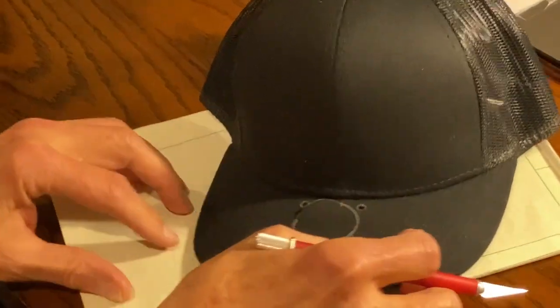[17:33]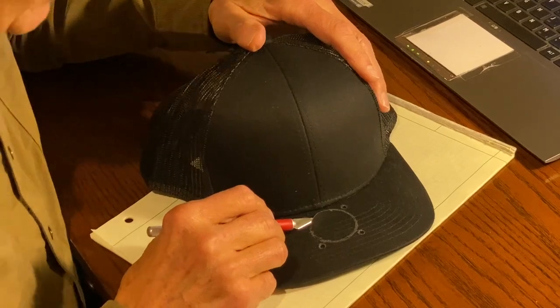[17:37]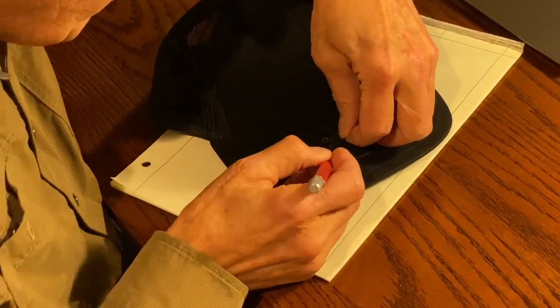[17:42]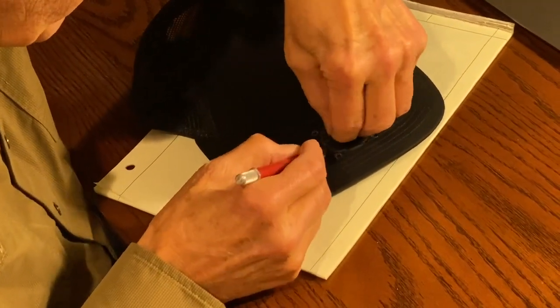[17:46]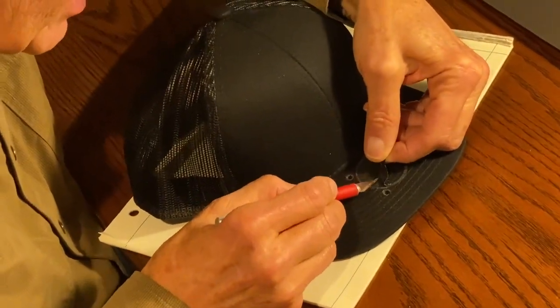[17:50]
I'll go ahead and go all the way around, and then when I remove the cloth, I'll show you that last step. Okay, so I've cut all the way around there, and you can kind of see that I can kind of pull this off here. My hand's probably in the way for you to see, but there are some stitches in there, and I'll just sort of cut those as I pull this off.
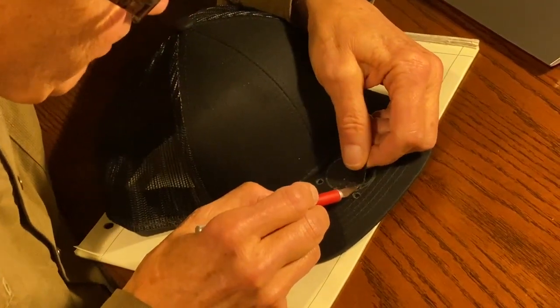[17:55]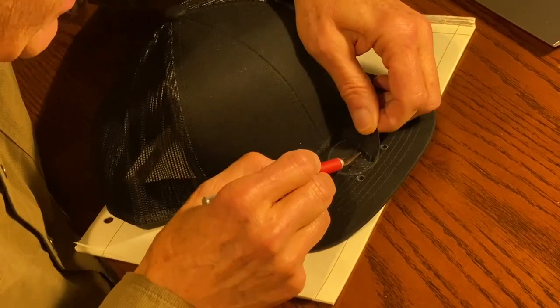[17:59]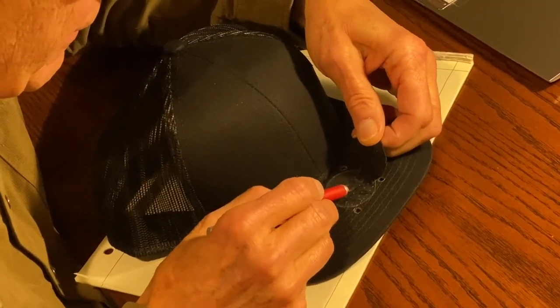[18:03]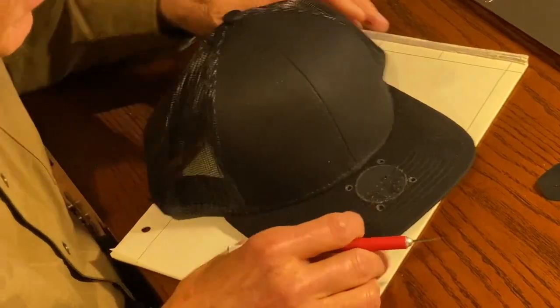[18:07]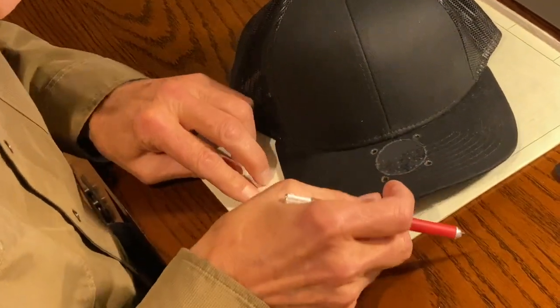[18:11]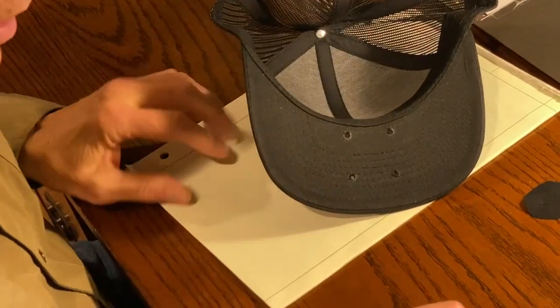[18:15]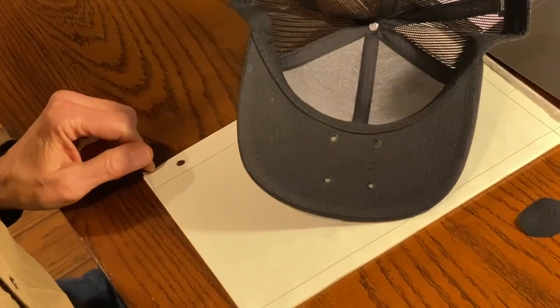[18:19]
And when you get this off, you're going to find generally these things are plastic on the inside. The brims have a plastic material like that. And then they have a bunch of stitching through there. Okay, let me turn this over now. I would like to have some mark on the back side so I can cut off the cloth there too.
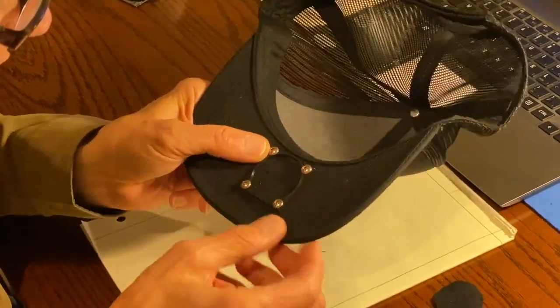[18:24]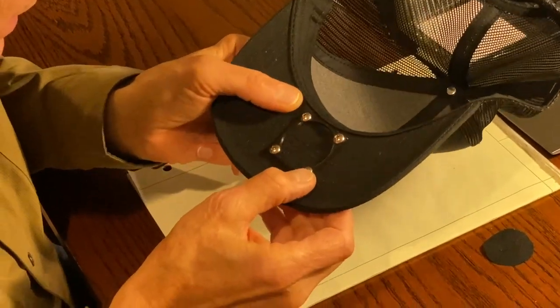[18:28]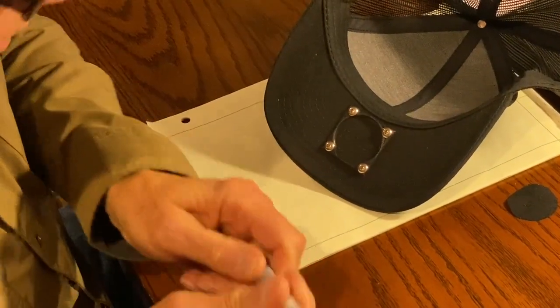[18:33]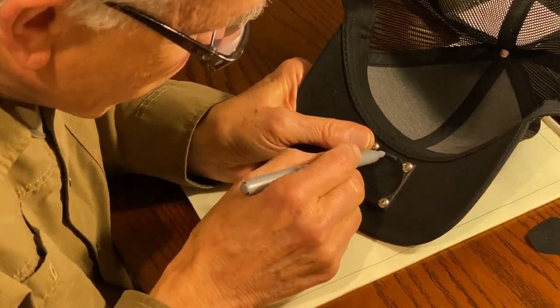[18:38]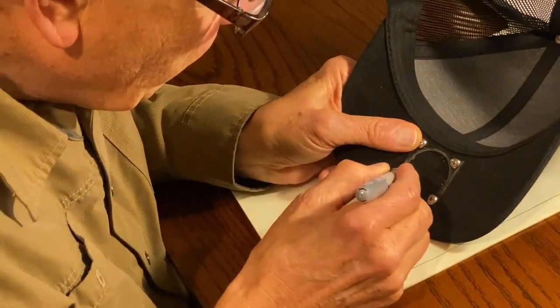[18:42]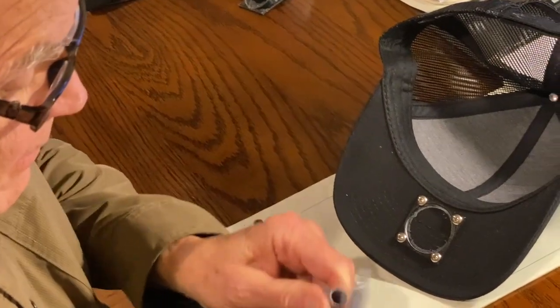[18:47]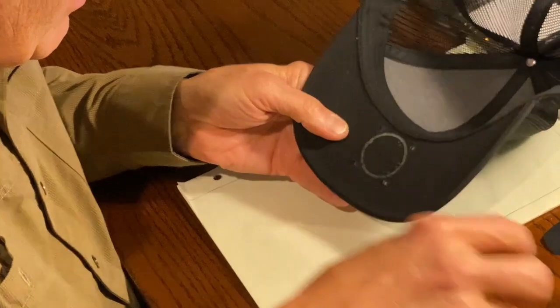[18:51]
Okay, so now I want to make a cut on the bottom here as well. And so I've just taken that little piece that we printed up and put screws there to hold it in the right spot. And I'm going to go ahead and mark that as well. And I'll take that out. Now I've got that marked as well. So I'm going to cut this the same way.
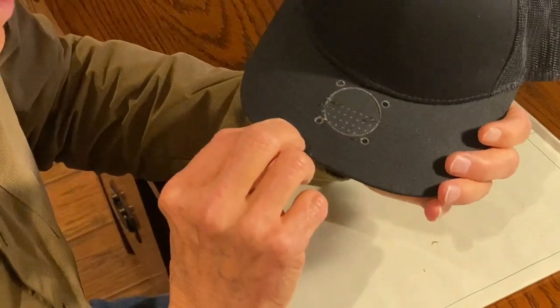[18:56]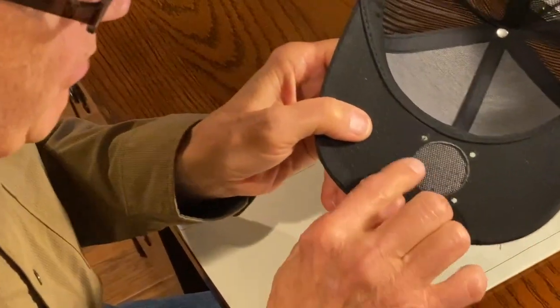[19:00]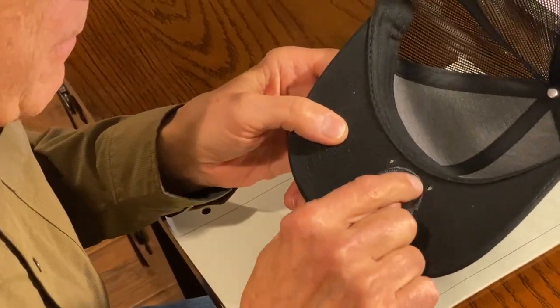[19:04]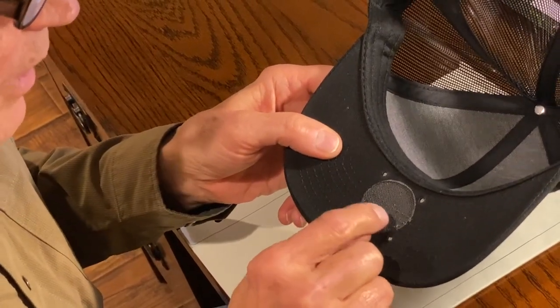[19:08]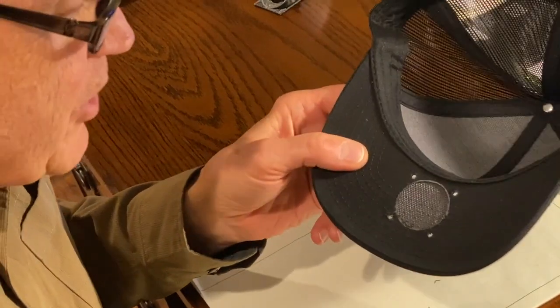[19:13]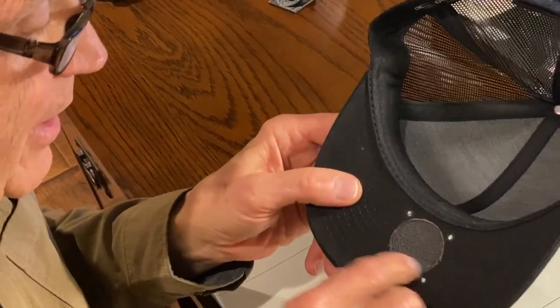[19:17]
Okay, so here I've removed the fabric on the top, and now I've removed the fabric on the bottom. And so now we want to cut this out with a coping saw. So we need another hole in here so we can put the coping saw in. So that's the next thing we'll do. I'll meet you out in the garage and we'll punch a hole so we can get the coping saw in there and cut this out.
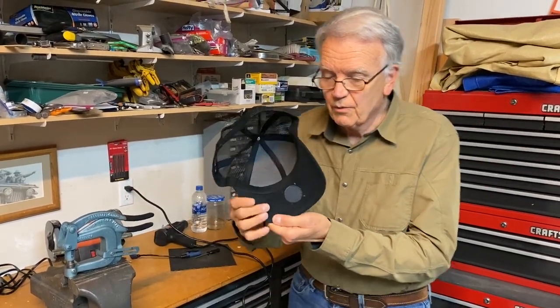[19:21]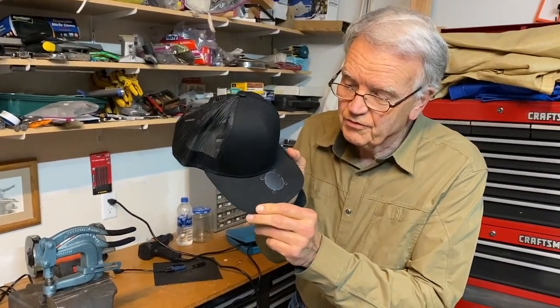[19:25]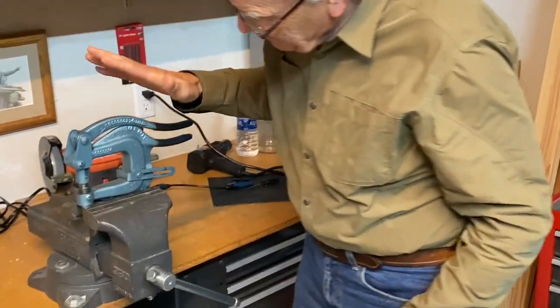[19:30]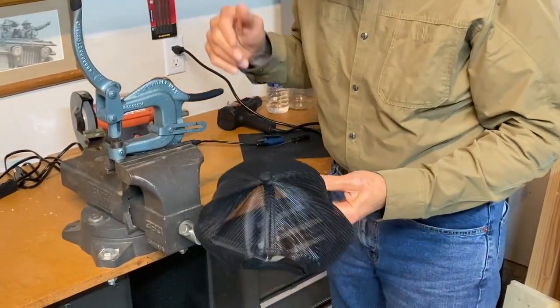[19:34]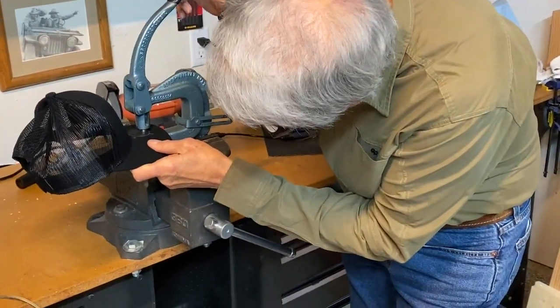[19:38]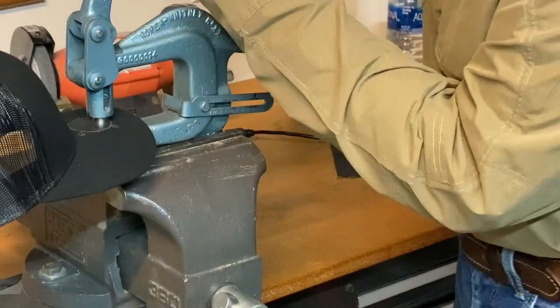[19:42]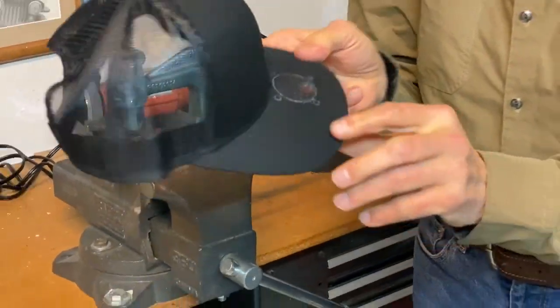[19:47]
Okay, well, here we're back in the garage, and so we've got the hat with the cloth removed so we can get ready to cut out the hole for the fan. So I've got the punch, and I had a punch that was bigger than the other. That'll make it easier to get the saw in. And so I'm going to just take and punch out a hole close to the edge. All right, so we got a hole, and I'll use that to put the coping saw in.
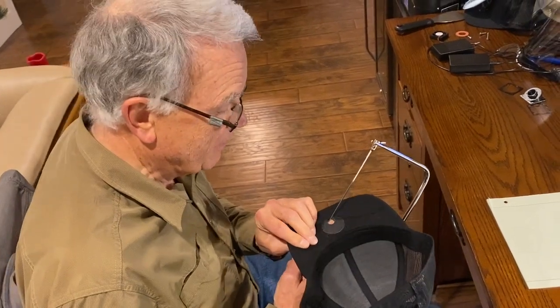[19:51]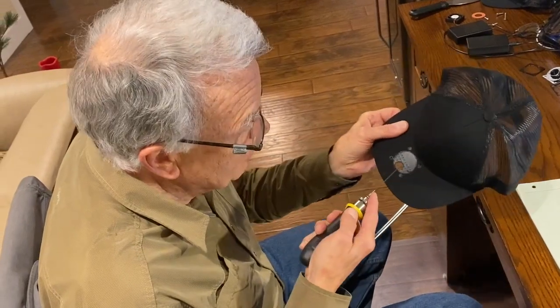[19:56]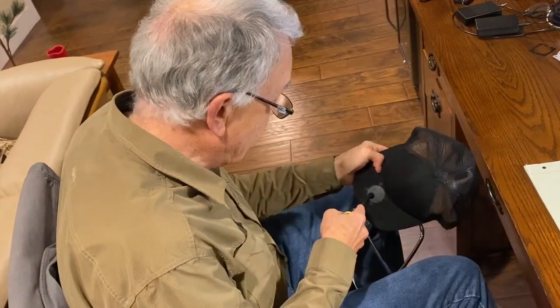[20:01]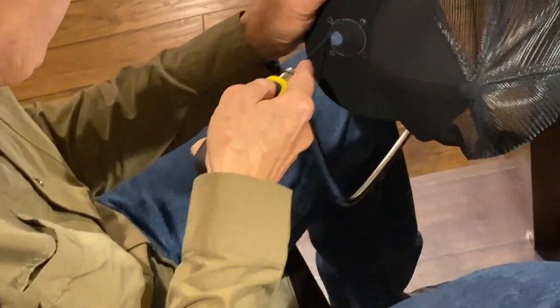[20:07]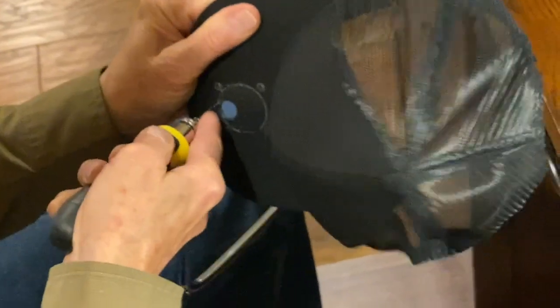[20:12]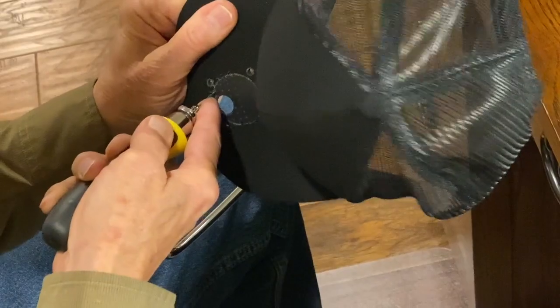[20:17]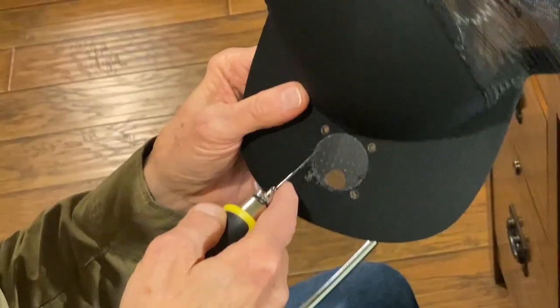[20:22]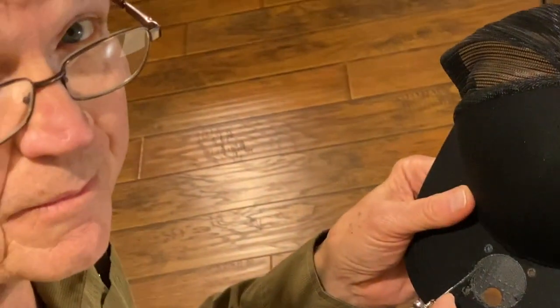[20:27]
Okay, so here we are back where I can sit down and cut this out. I got the hole. I just took the coping saw blade off and put it in the hole. And this is plastic, so it cuts pretty easily. So I just gently cut this and follow around the circle. Okay, you get the idea. And then when I get this hole all cut out, we'll come back and start assembling the hat.
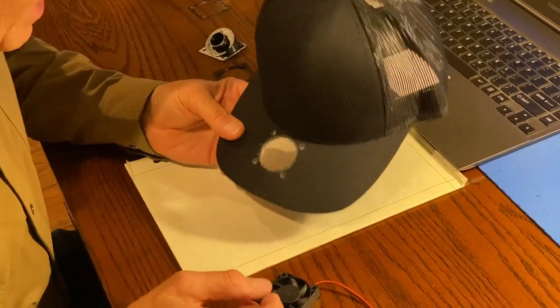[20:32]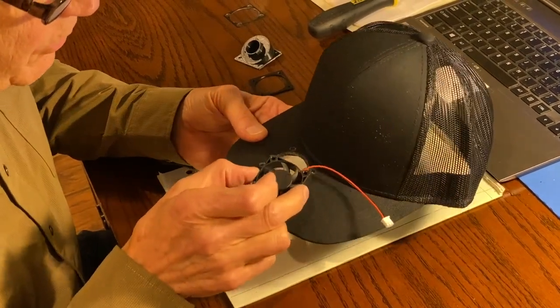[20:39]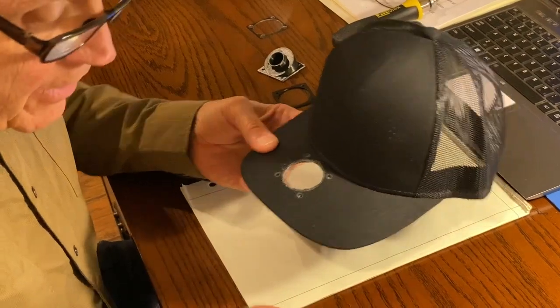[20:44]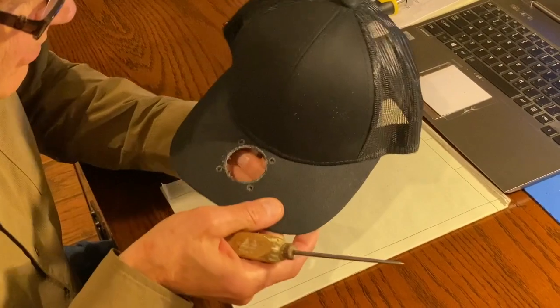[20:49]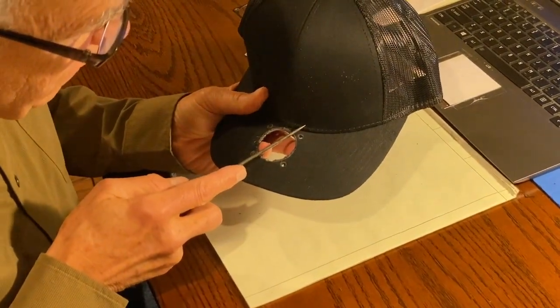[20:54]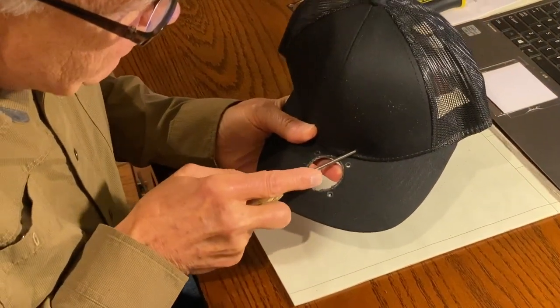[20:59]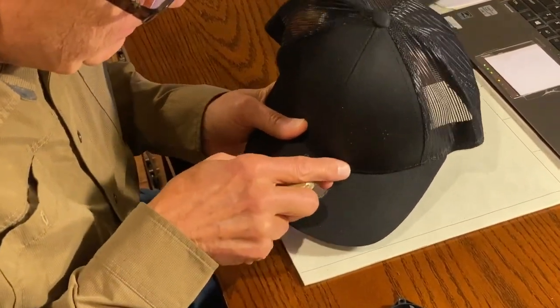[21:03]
So here we are back. We've now got a hole cut in here. We've got the holes for the screws, a hole for the fan. And what we really want to do is we really want to hide these wires inside the fan so they're not hanging out inside. So I'm going to take something to poke it. It's a little ice pick. And I'm going to just put a hole right by this and off at an angle kind of towards the one side. And kind of make that hole as big as I can.
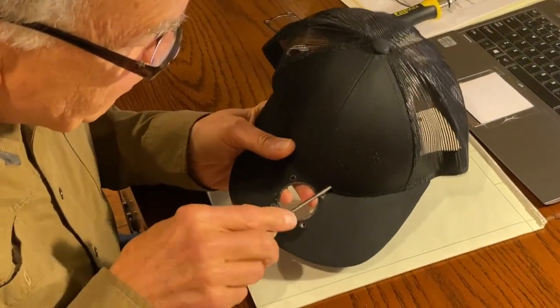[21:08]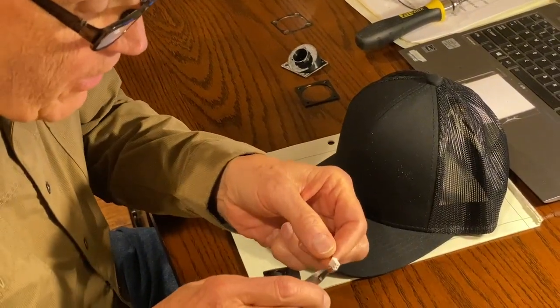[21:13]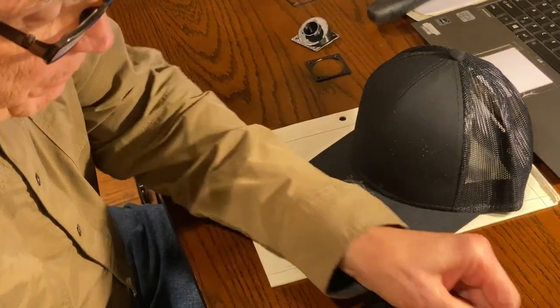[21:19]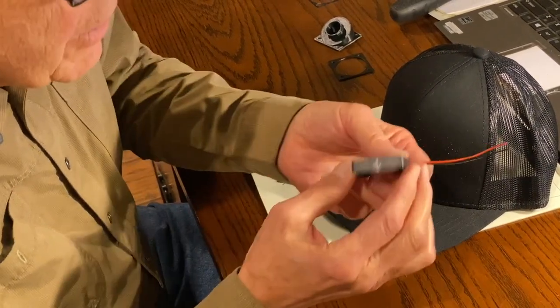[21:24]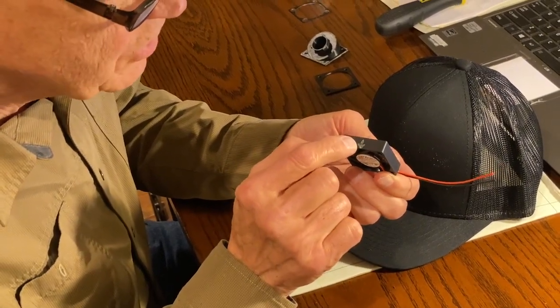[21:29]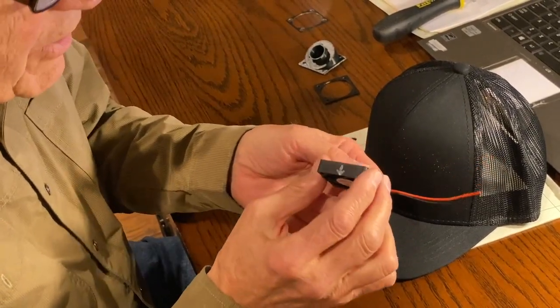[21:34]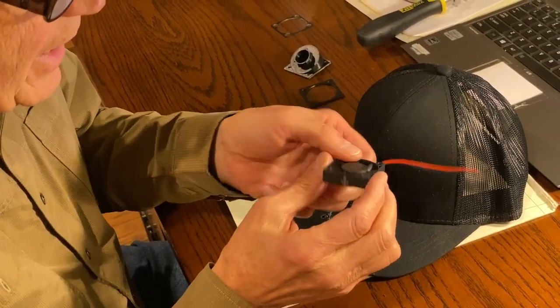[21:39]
And what I want to do is try to put those wires for the fan through that hole. It does have a little connector on here that I'm not going to use, so I'm just going to cut that off. And what I'm going to try to do now is just put the fan in here. The fan does have a little mark showing you the direction of air, although it's just a little emblem in black. I put magic marker silver there to show. But basically, this is on the bottom. You'll see this in the bottom of the hat. Get the airflow direction correct.
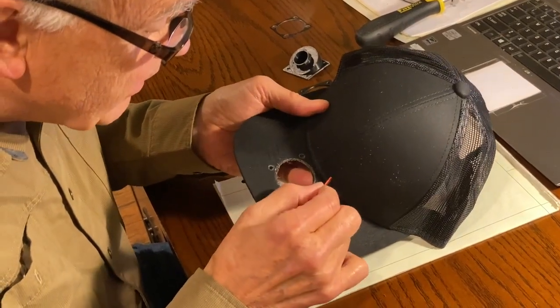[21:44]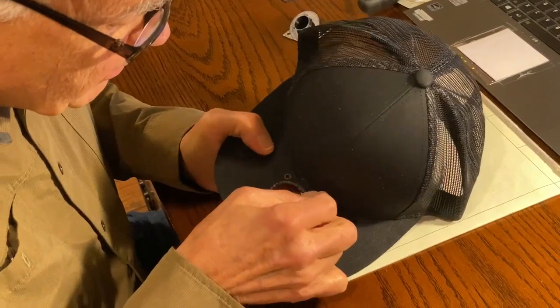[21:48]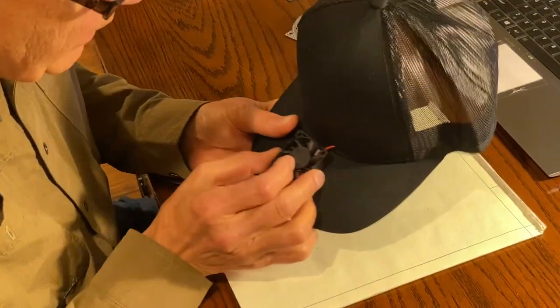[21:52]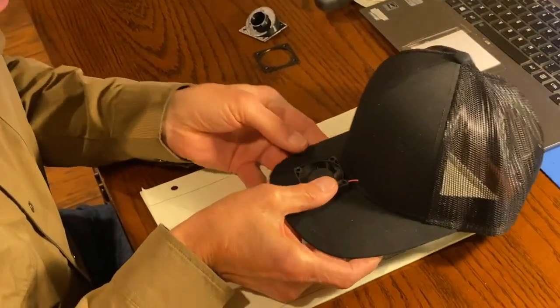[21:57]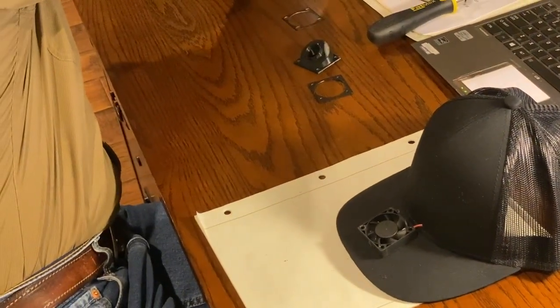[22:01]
And let's see if we can get these wires through the hole. And so now we've got that wire going in there, which is great. And there's where the fan's going to sit. Now what I'm going to do is take these 3/4 inch 6-32 screws.
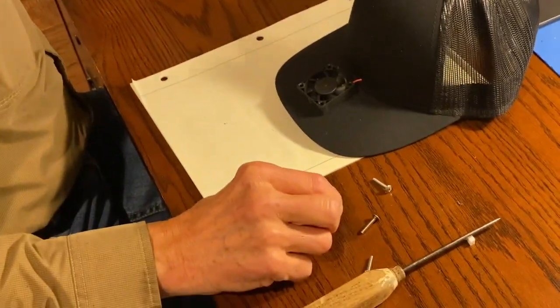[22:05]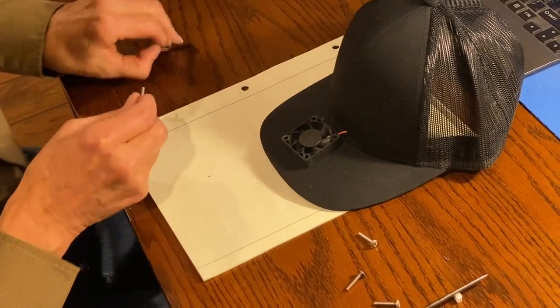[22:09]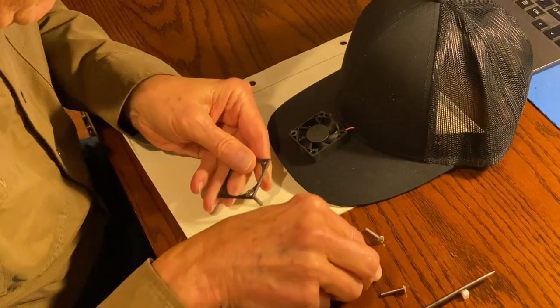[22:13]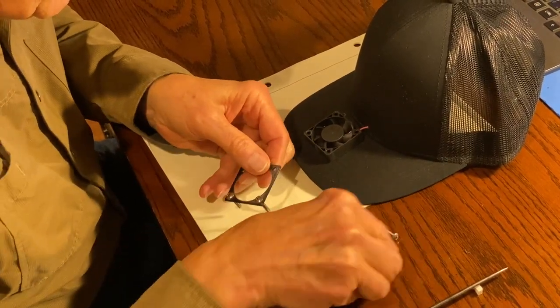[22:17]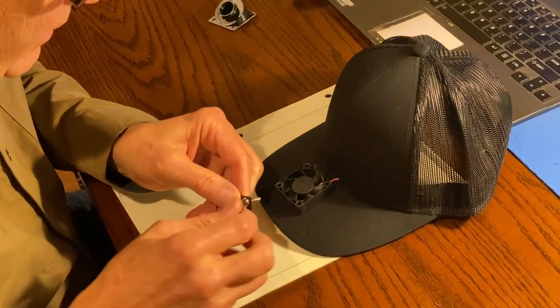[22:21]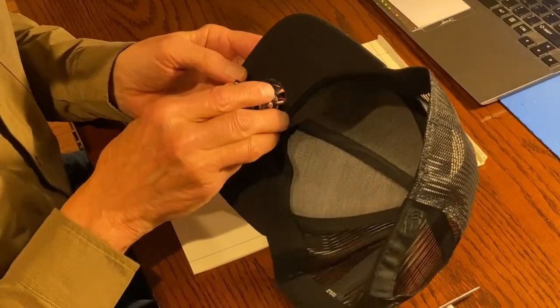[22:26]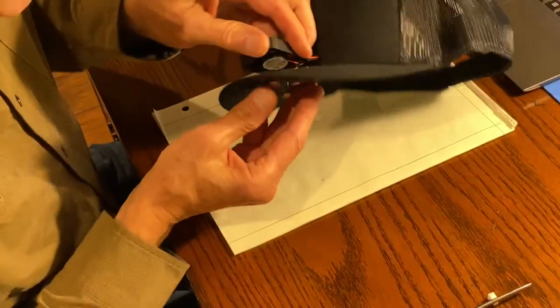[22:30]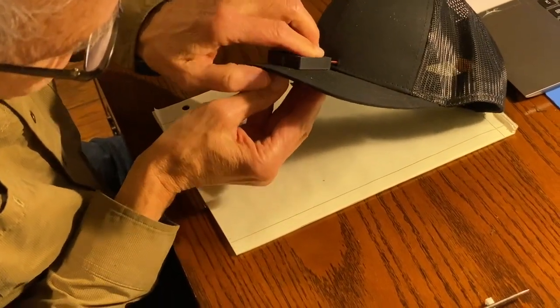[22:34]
I'm going to put them through the bottom plate, which will go under the brim. And then I'm going to try to guide them through the holes in the cap and I'm going to try to get them into the holes in the fan.
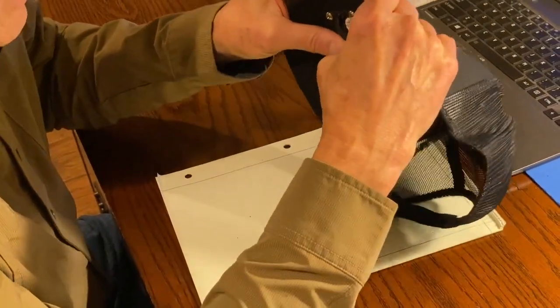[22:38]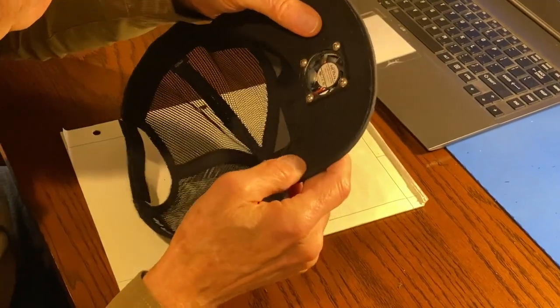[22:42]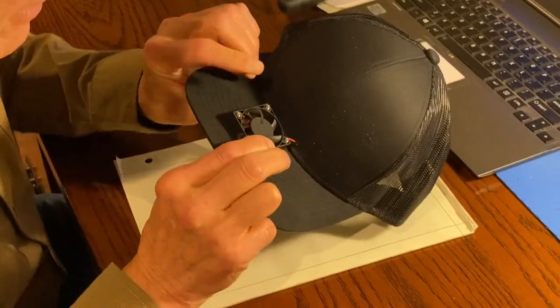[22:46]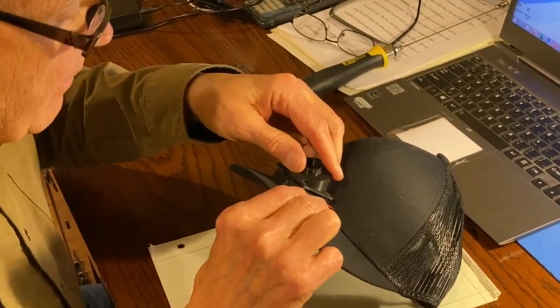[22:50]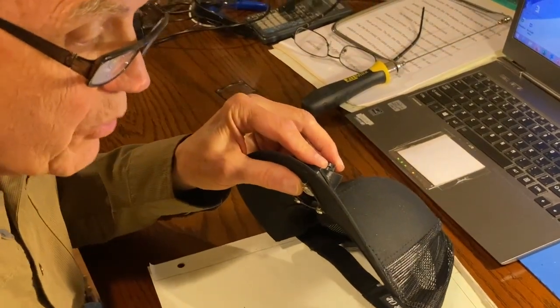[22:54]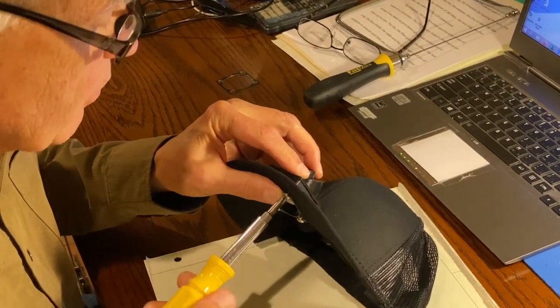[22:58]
Okay, so that's what we have so far. We have that bottom plate on there. We have the fan in the right orientation. And now I'm going to take our little adapter, which has the tapped holes that I put in there. And now I'm going to screw that into the adapter.
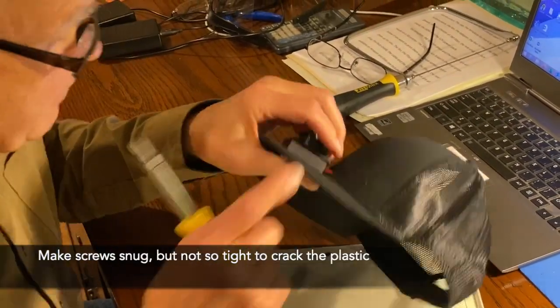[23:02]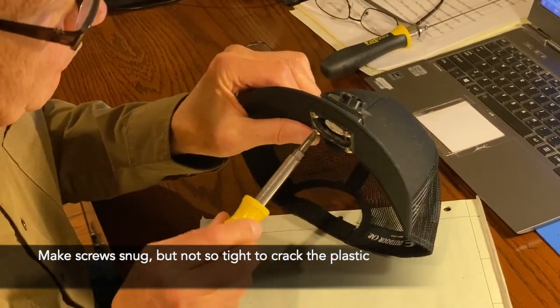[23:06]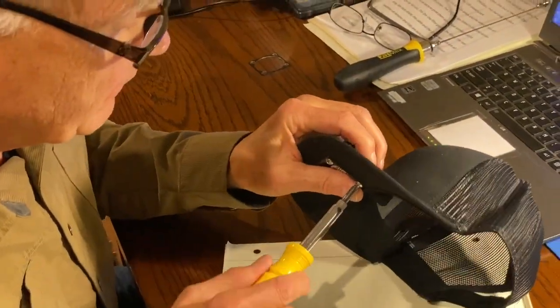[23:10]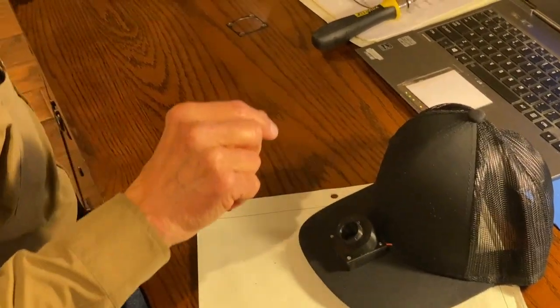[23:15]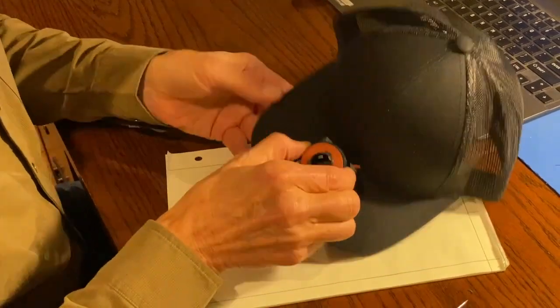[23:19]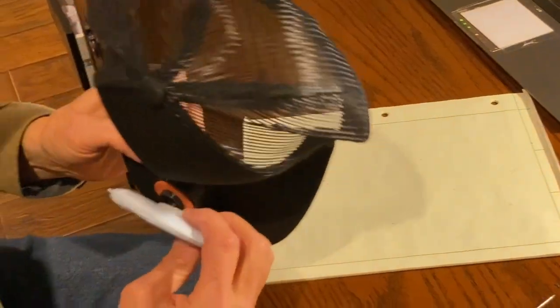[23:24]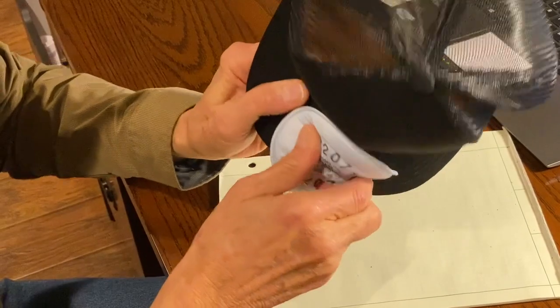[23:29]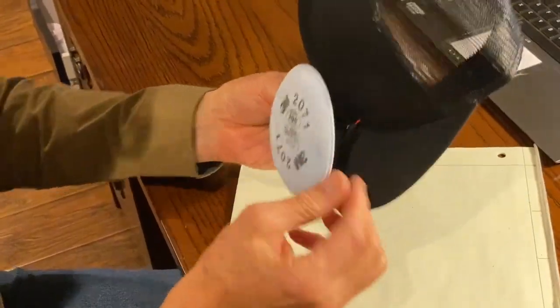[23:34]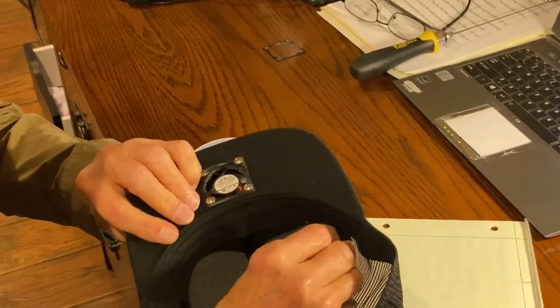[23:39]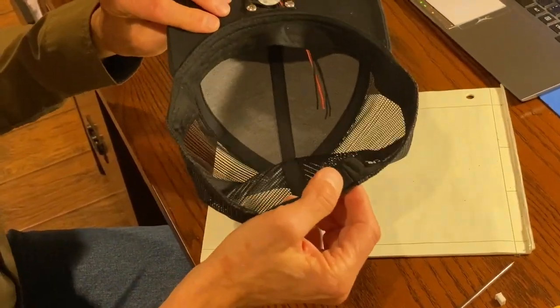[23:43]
And then we've got the mount. And then, of course, there's our gasket that we'll put on. And then grab a filter. And then we can put that filter on there. Okay, so now that is tight. We do have some wires in the inside of the hat. We have yet to put on a plug on the back of the hat, and so that's what we need to do next.
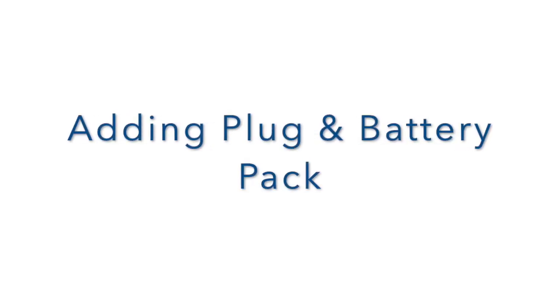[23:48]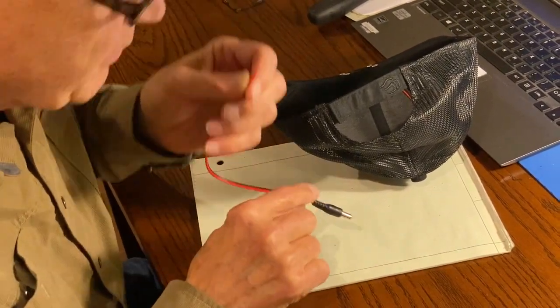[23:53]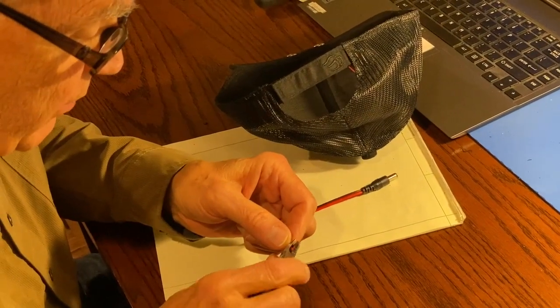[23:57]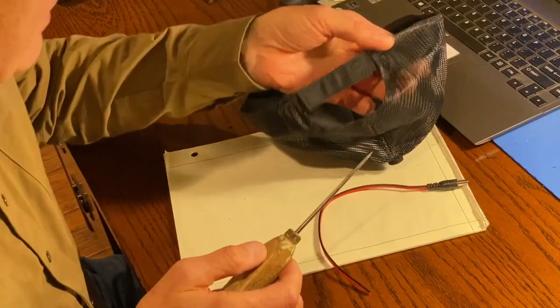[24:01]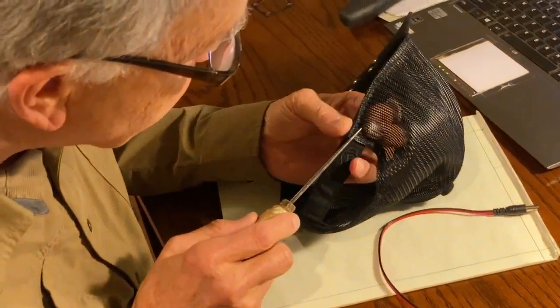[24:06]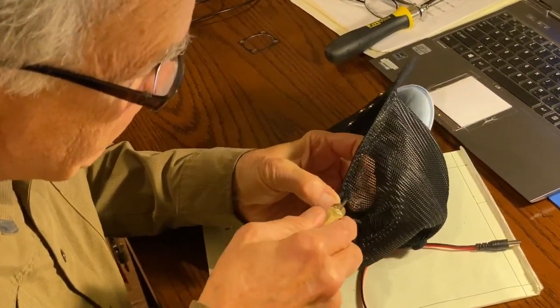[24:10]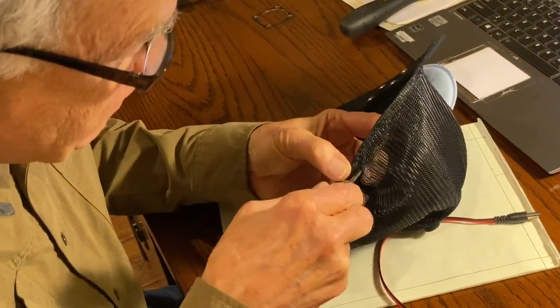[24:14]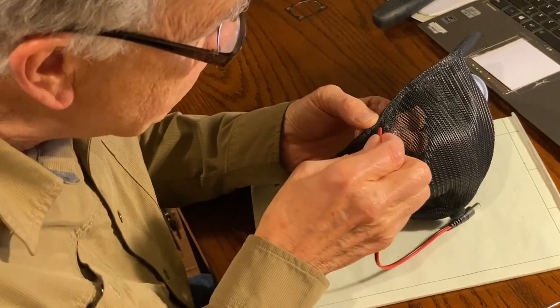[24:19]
So now let's go ahead and put this plug on the back of the hat and really do the same thing. We're going to be cutting off this wire, making it a little shorter, so I'm going to cut those pieces off, so maybe it'll go through a little bit easier. And this hat has netting in here, but your hat may be solid. But in any case, you can just make a hole. Try to make that hole big enough that you can get these wires through.
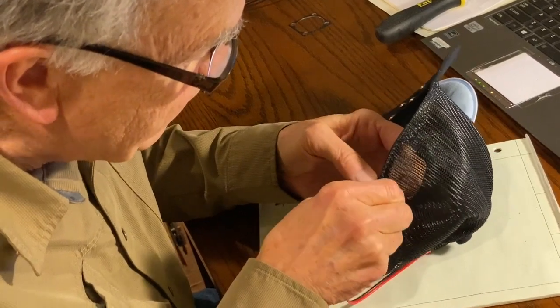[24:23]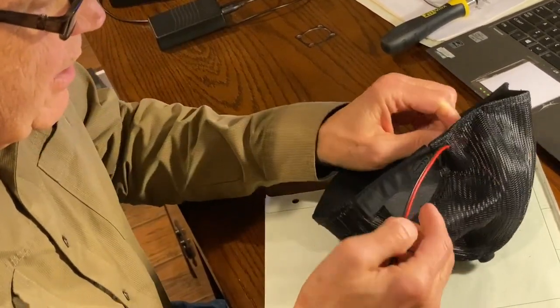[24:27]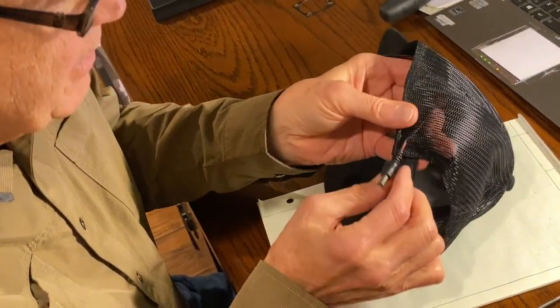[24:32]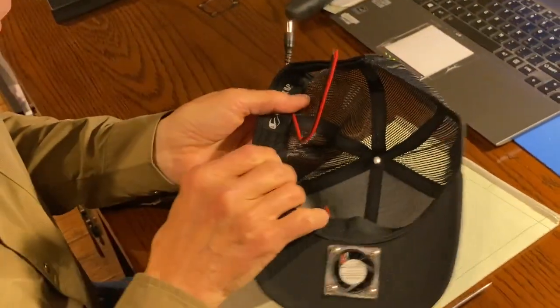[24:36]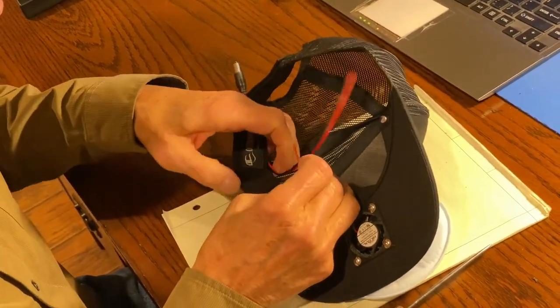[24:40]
And sometimes they catch some of the threads and you have to kind of move it a little bit. This time I was a little lucky. Just went through without any problem. And I usually leave about a half inch of wire showing in there. And you can see what the next thing we have to do is to connect these wires.
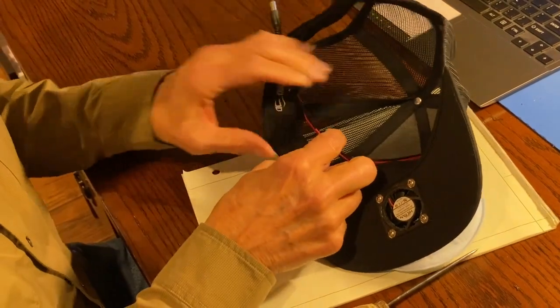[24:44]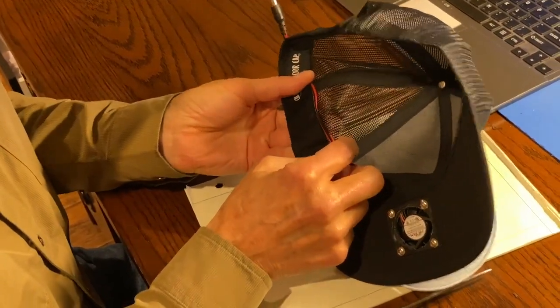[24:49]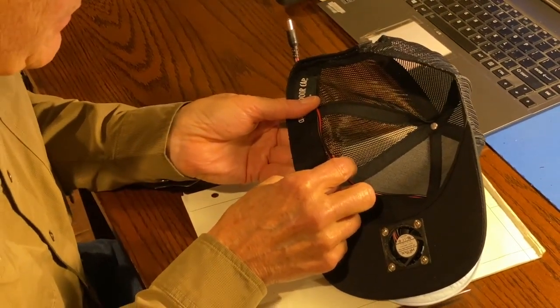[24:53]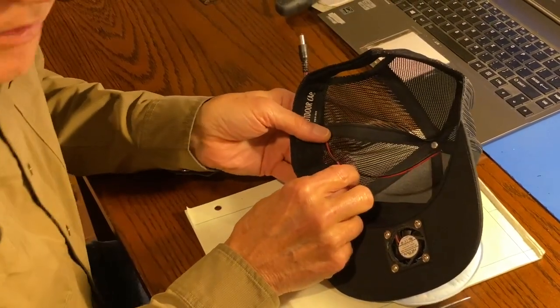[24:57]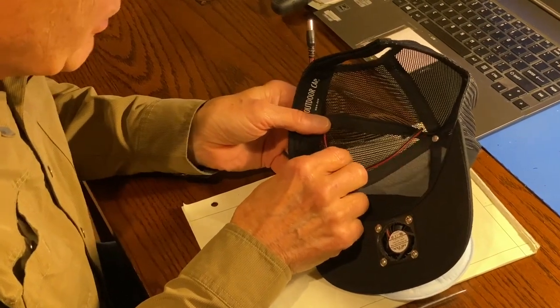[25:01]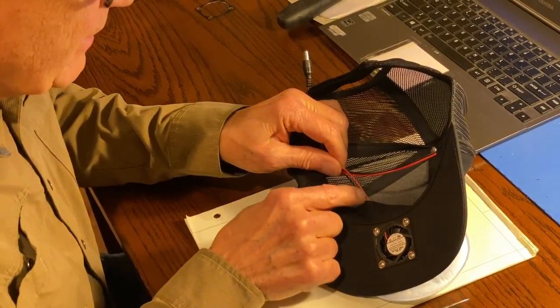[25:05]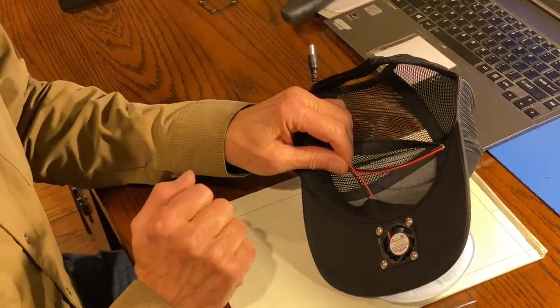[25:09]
So what I'm going to do off camera is I'm going to cut these wires and line them up and then strip them. And maybe I'll show you some of that if you haven't seen that before, but probably many of you have done a lot of these things. But in any case, I'm going to get these wires soldered together. I'm going to put some heat shrink tubing on these so that I can slip it over them. And when we do that, then we'll be done.
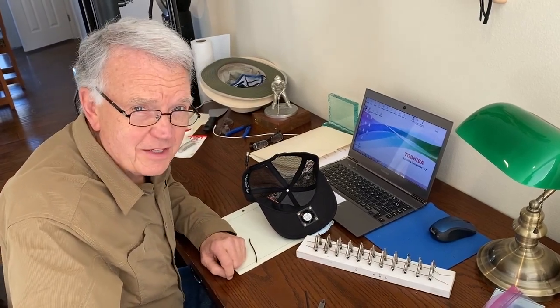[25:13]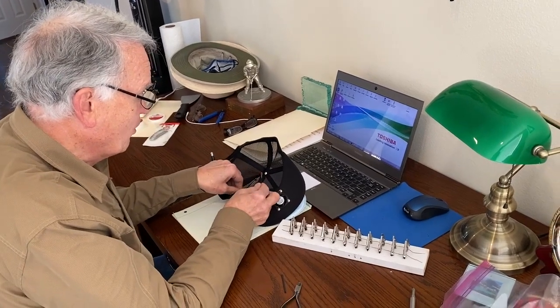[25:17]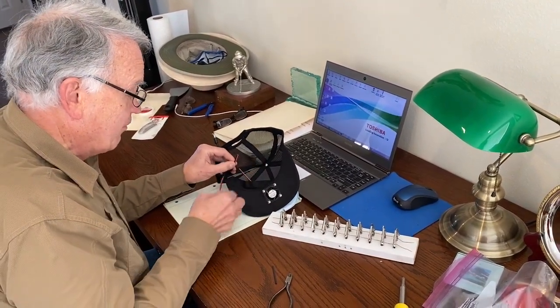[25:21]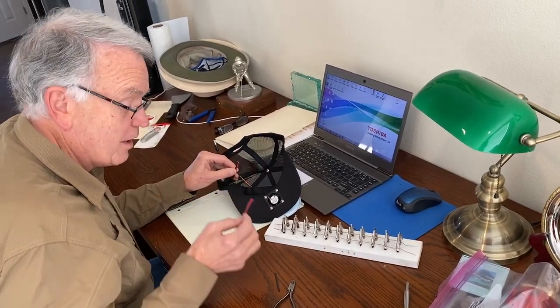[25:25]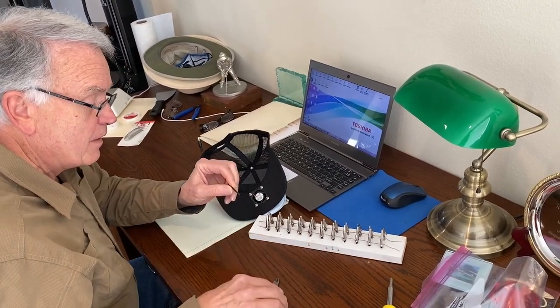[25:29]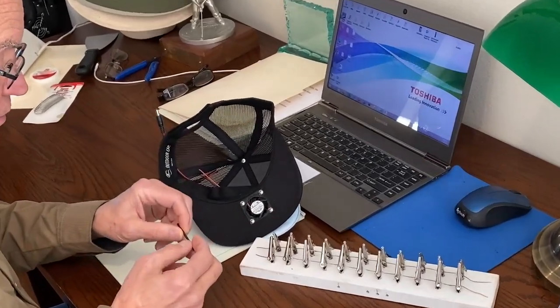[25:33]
Okay, we've got just a little more to do on this hat, and then we're going to be done. What we're going to do today is solder up these wires from the fan to the plug in the back. I've already cut off a little bit of the wire on this plug. Also, I'm going to put some heat shrink tubing on these wires so that they don't connect with each other. It's only 12 volts, but still it can short out.
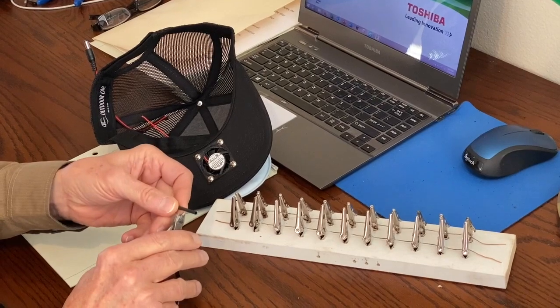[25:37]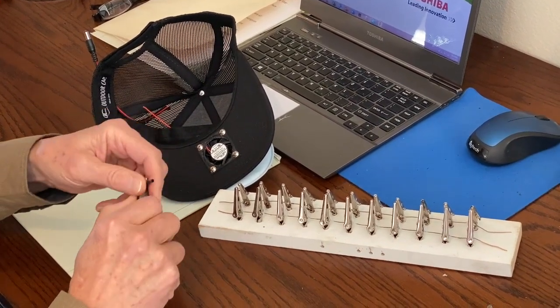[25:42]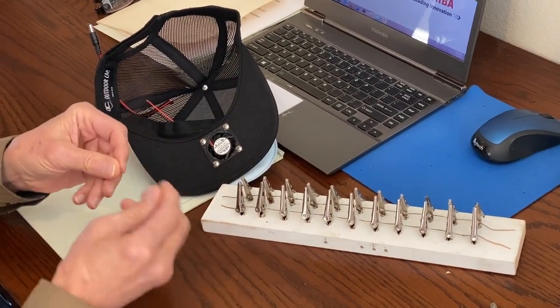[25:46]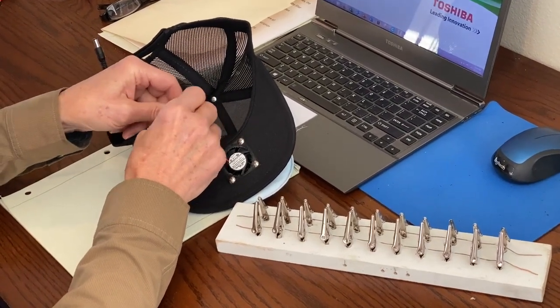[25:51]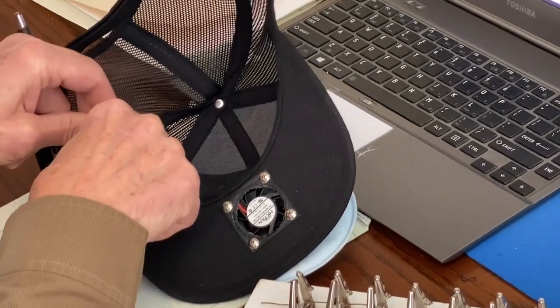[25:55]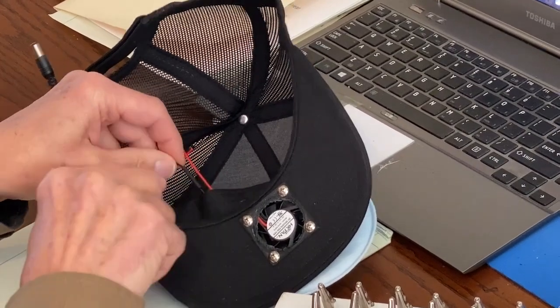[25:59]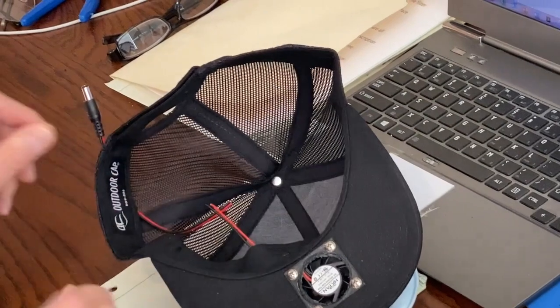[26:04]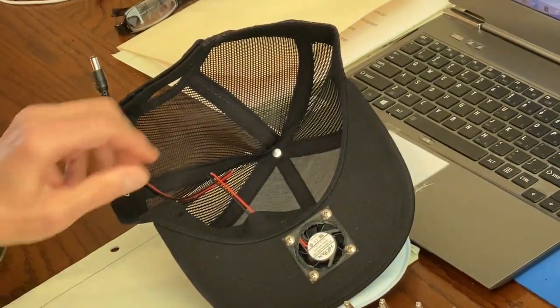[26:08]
So I'm going to solder these wires. And so I've just got some shrink tubing you can buy at the hardware store. I'll show you. We put a little heat gun on that, a little blower, like a hairdryer really. And I'll put that on these two wires. I can't tell you how many times I've soldered some wires together and forgot to put the heat shrink tubing on until after I've soldered the wires. So it's good to remember to do that before you solder the wires.
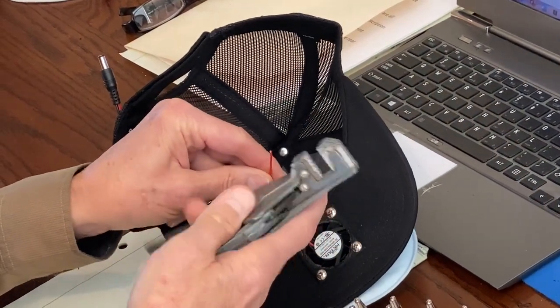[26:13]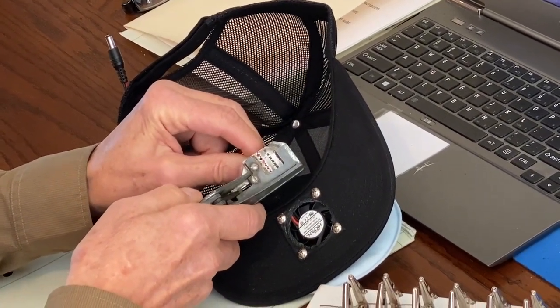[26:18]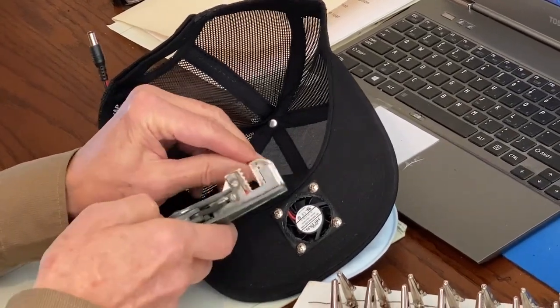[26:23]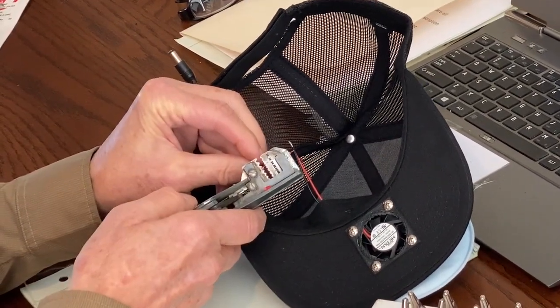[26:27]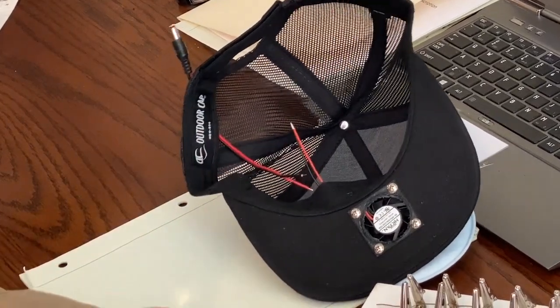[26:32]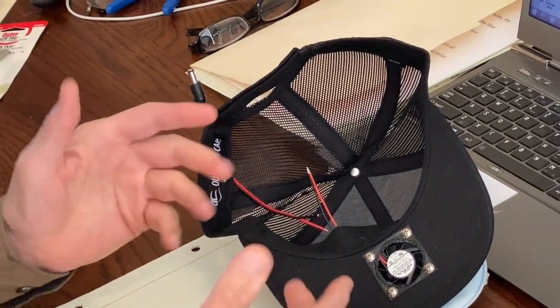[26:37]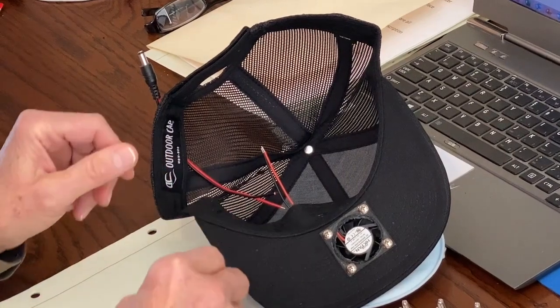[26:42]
Okay, then there are various wire strippers you can get. I've just got this old fashioned one, but it works well. And I'll just strip off a little bit of the insulation on the red wire and the black wire. Now I solder these wires together because I'm kind of old school. That's what I've been doing for years. But I have crimped wires too. So if you're in the habit of crimping wires together, that'll work fine. No problem with that, of course.
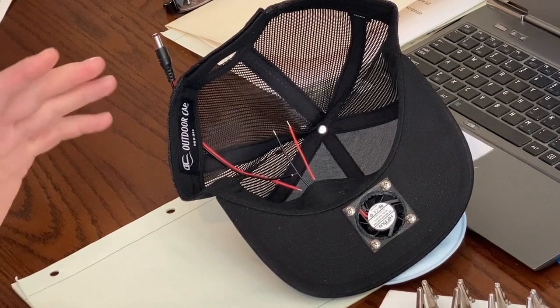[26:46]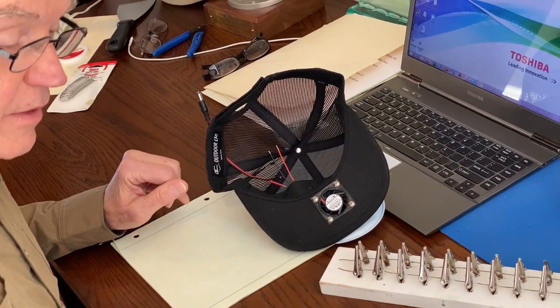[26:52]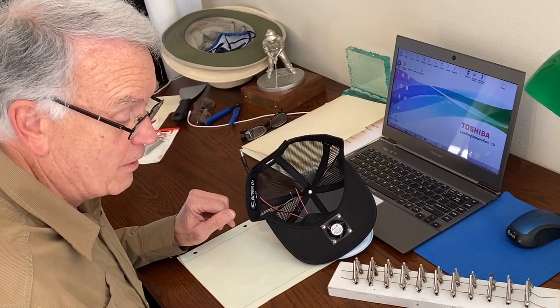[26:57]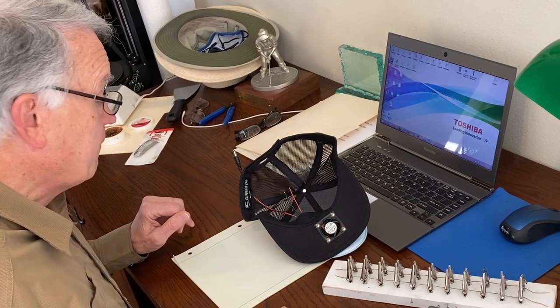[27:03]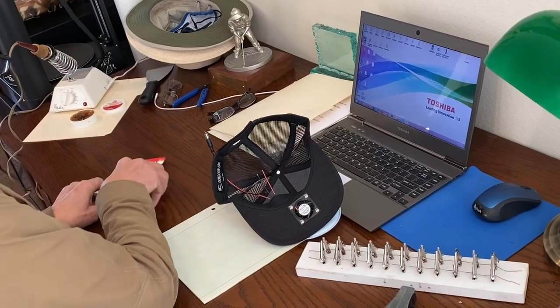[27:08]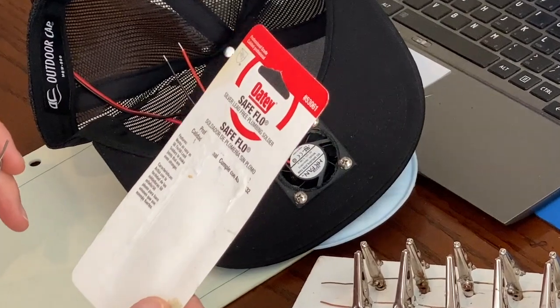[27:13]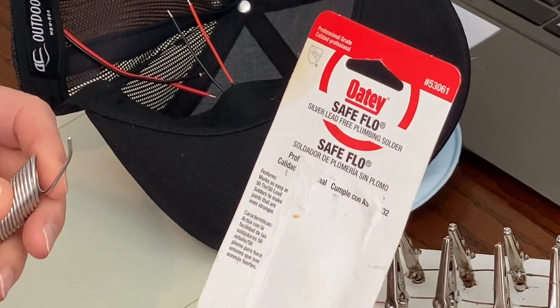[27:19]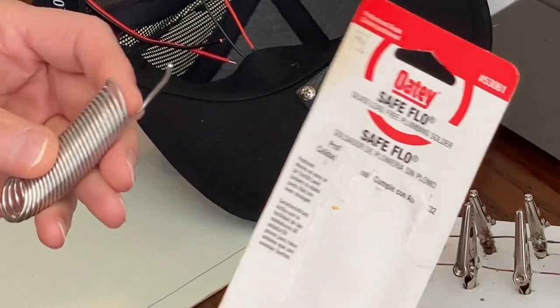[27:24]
Soldering, if you do want to do some soldering, one of the things that's happened over the years is they got rid of lead solder for a good reason. So I don't think you can find lead solder anymore. And some of the substitute solders they have don't work really well. But I have found a solder. I don't have any connection with Oatey solder, but this is a nice solder to use these days that doesn't have any lead in it, but it's silver and a little more expensive, but boy, it really works really well.
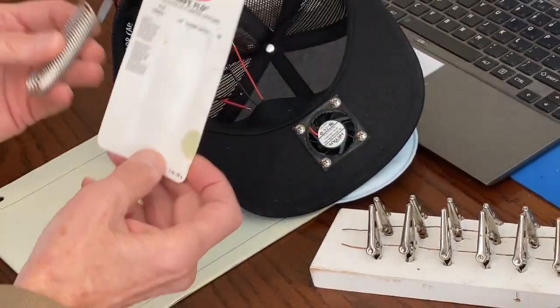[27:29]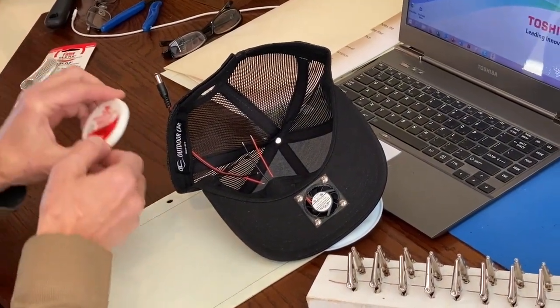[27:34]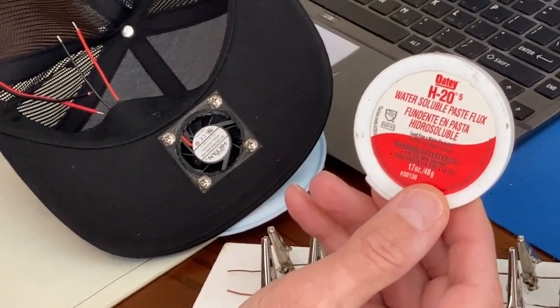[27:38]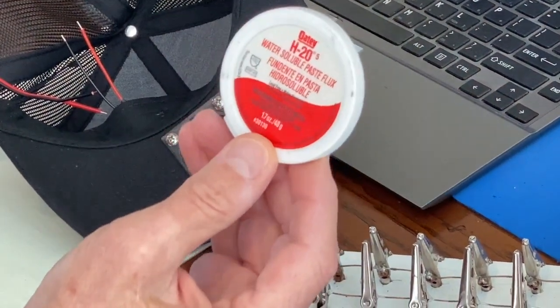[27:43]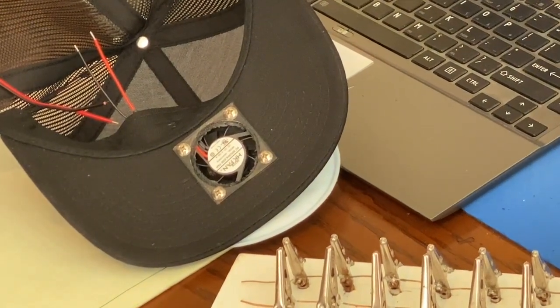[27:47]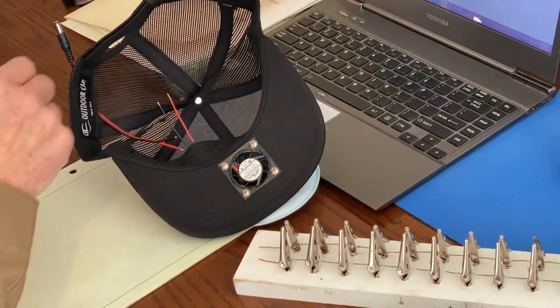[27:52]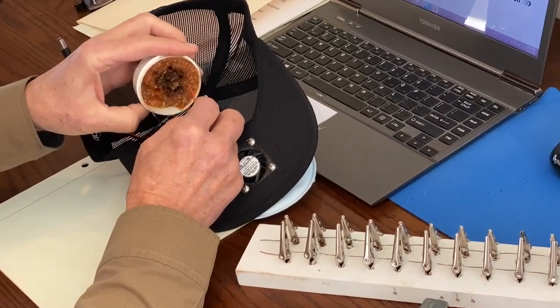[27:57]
So you can see that this solder works really well. You don't need very much. That company also makes a real nice paste flux that I'm sure there are other ones out there that work just as well, but these are the ones that I found, and I just get these at Ace Hardware. So if you're having trouble with some soldering, then that's a good solder to consider. I like to just take these ends, just put a little bit of flux on them.
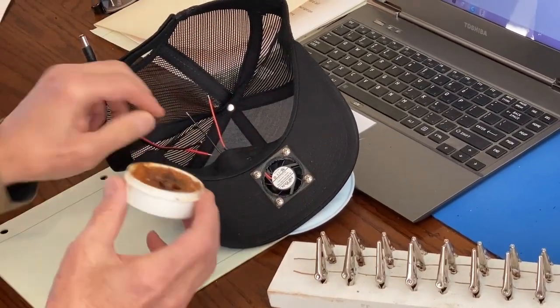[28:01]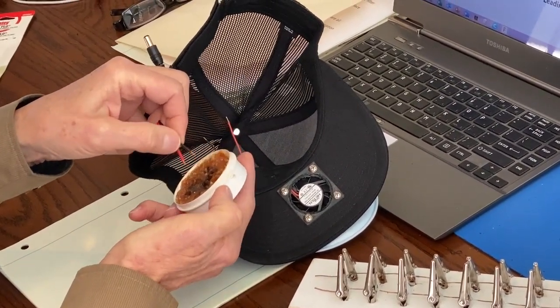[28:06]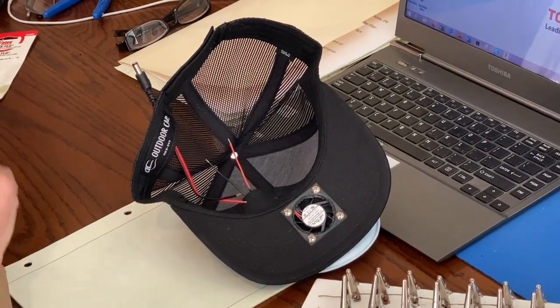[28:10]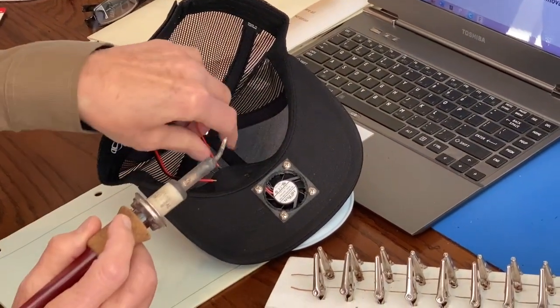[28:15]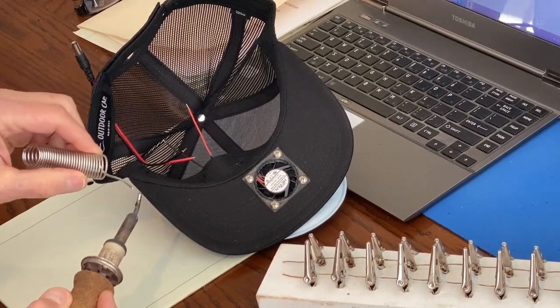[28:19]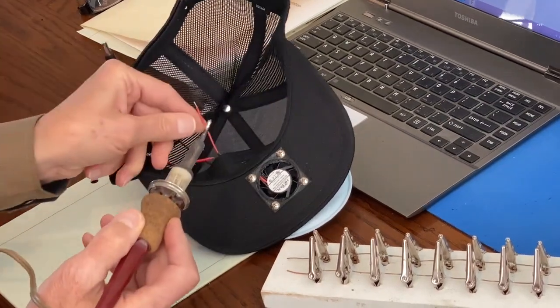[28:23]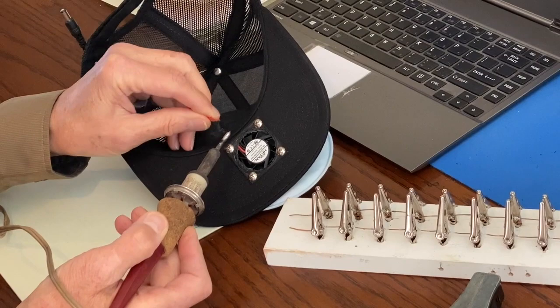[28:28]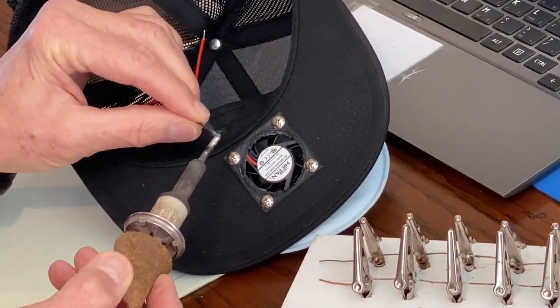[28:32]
Just stick it in the flux. That's all that's needed. Then I've got a soldering gun, not a gun, but a little iron, and put a little bit of solder on it. And since we've got some flux on there, it just heats up. And what this is, for those of you who've done soldering before, that's just called tinning.
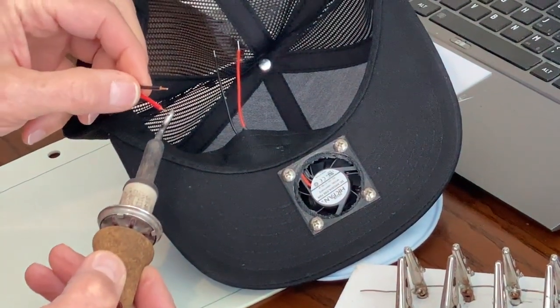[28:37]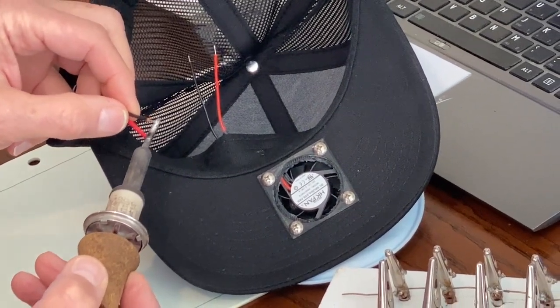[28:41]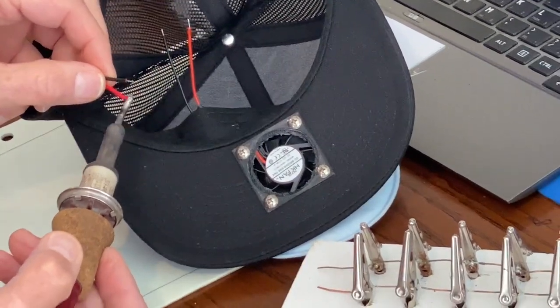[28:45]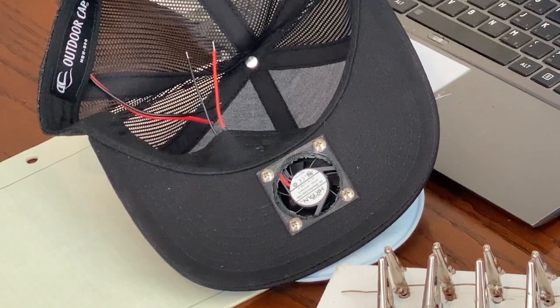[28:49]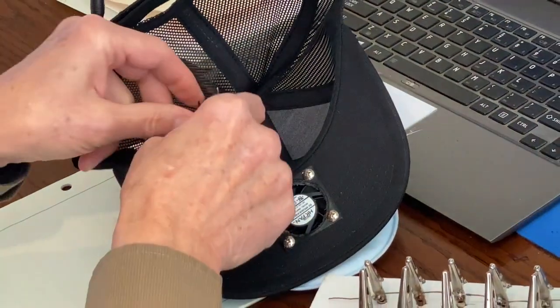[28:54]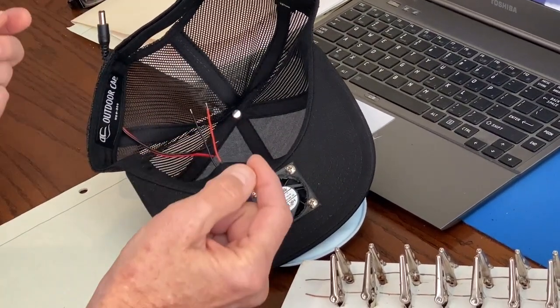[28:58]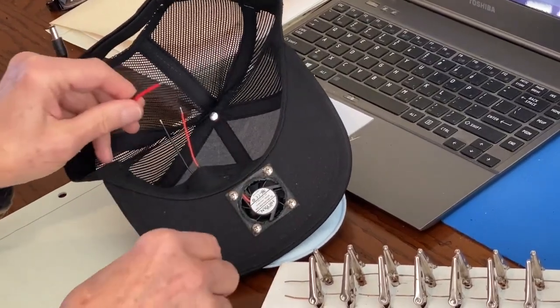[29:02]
It just takes and puts the solder on the wire. You can kind of see it flow into there. And then they're kind of ready to be soldered together. If you only have two hands like I do, it's difficult to hold the two solder wires together and the soldering iron all at once. So it's kind of nice to have something to hold.
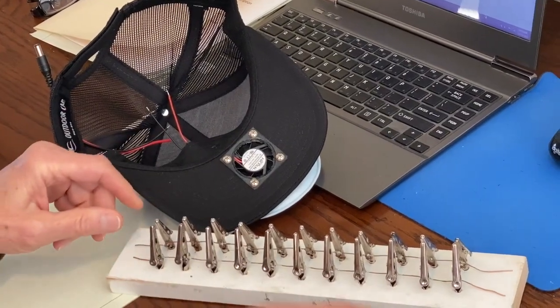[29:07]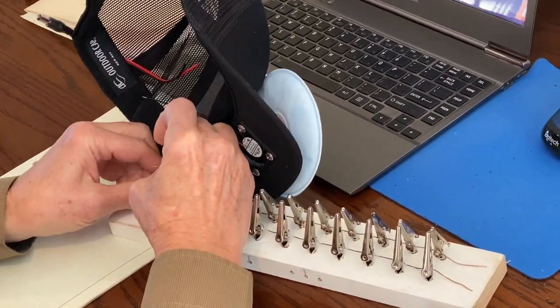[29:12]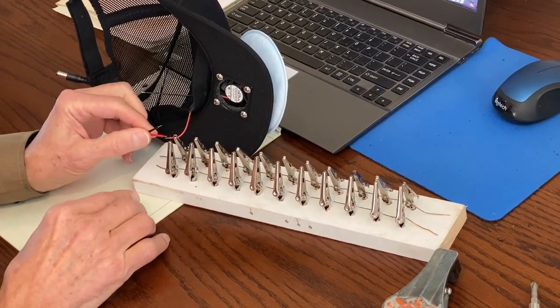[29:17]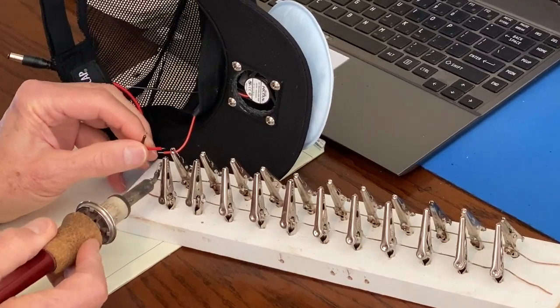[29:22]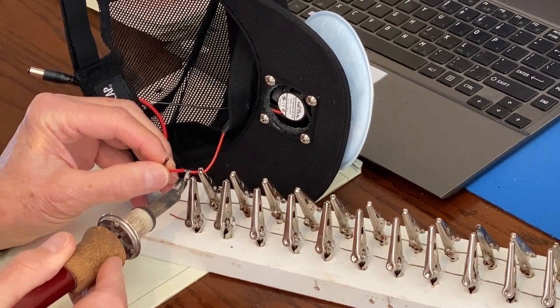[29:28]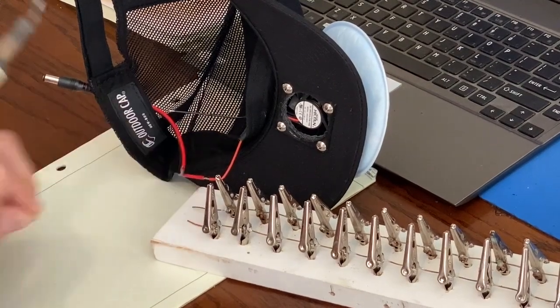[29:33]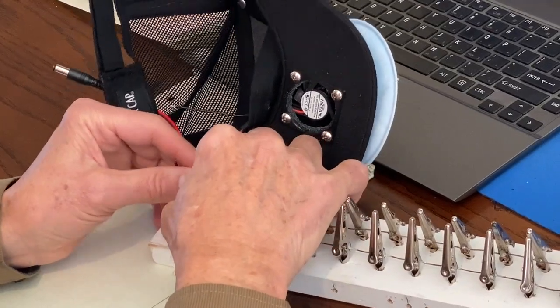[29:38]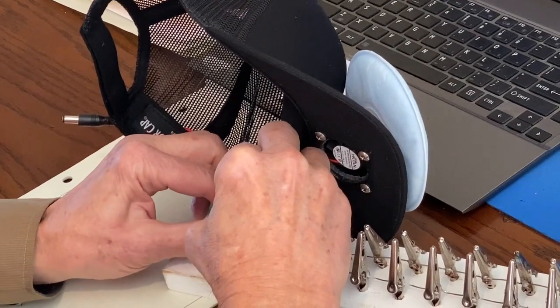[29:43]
This is something I built to test a bunch of LED light bulbs. And it just has a nice little clip there. And so that allows me to have a free hand so I can just put a little heat on these. And since they're already tinned, they make a nice connection. So that's the red wire, and I'll do the same thing on the black wire.
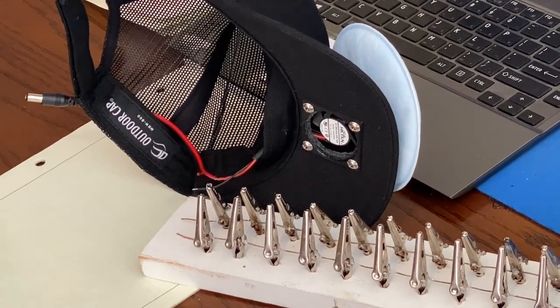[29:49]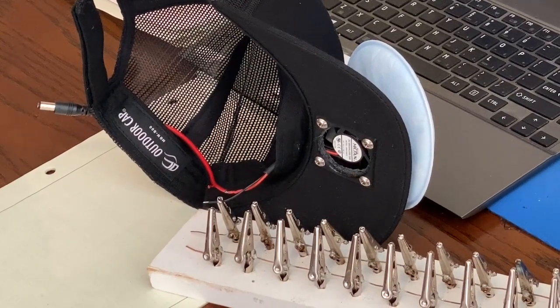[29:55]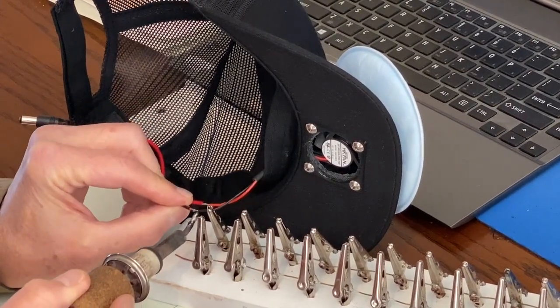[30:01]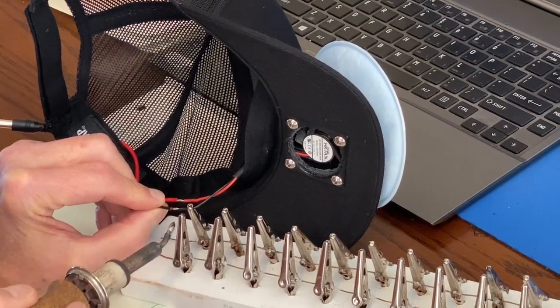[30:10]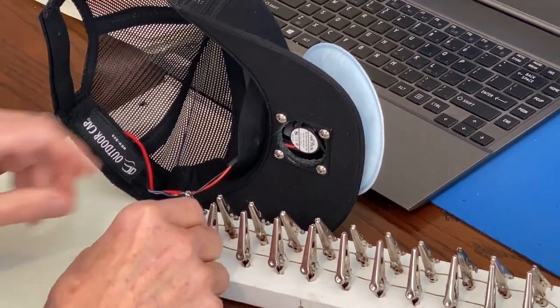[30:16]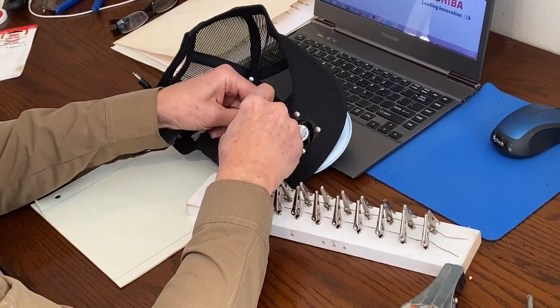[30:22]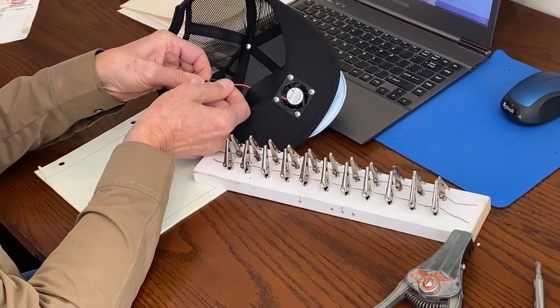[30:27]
I hope you guys can see that, but you get the idea. Probably if you don't. And since these wires are tinned, it really doesn't take much heat at all to just melt the solder so they're in good contact. Okay, that's all that's needed. And then what I'm going to do next is take these heat shrink tubing, just put them over these connections that I made.
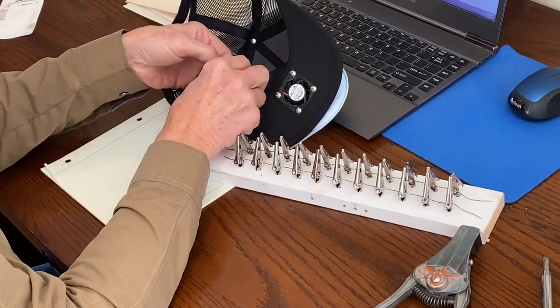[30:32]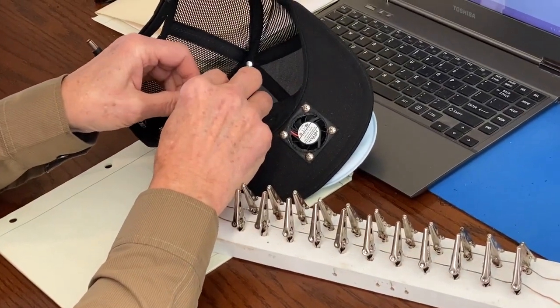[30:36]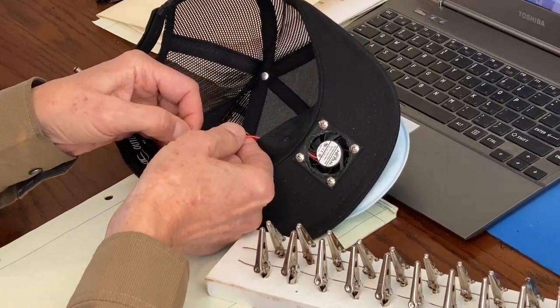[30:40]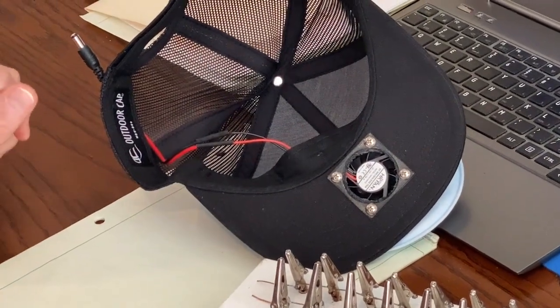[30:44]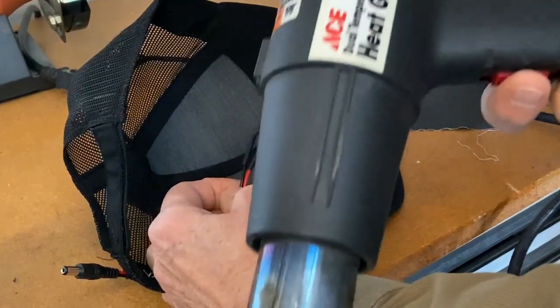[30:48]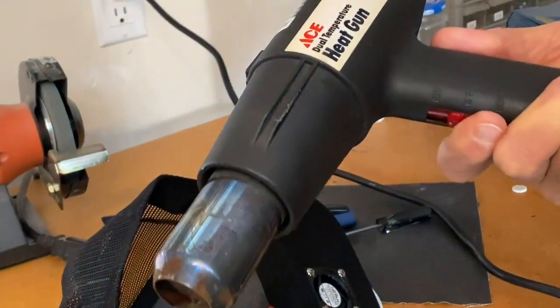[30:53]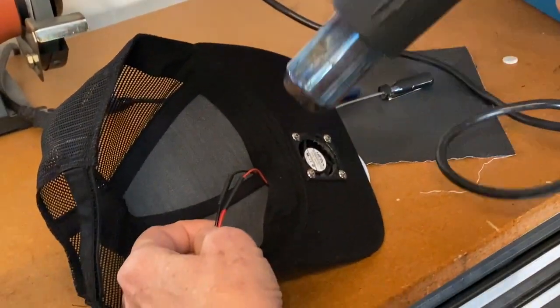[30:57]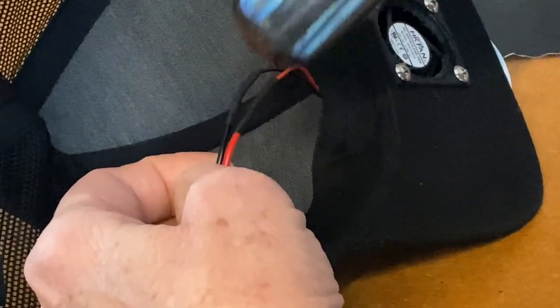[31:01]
And then I'm going to take this out in the garage where I've got a heat gun, and I'm just going to shrink that tubing. I'll show you that. Okay, so I just have a heat gun here. This one's actually from Ace, but a lot of places make them. I'll just turn that on, and I'm just heating up this heat shrink tubing. It doesn't really take too much. That's all it takes.
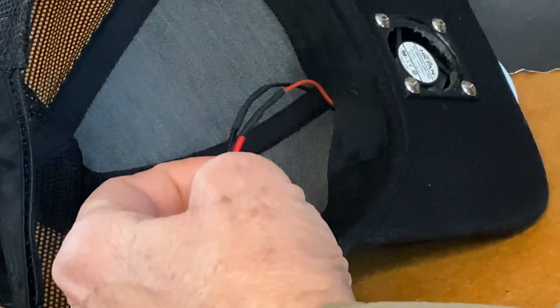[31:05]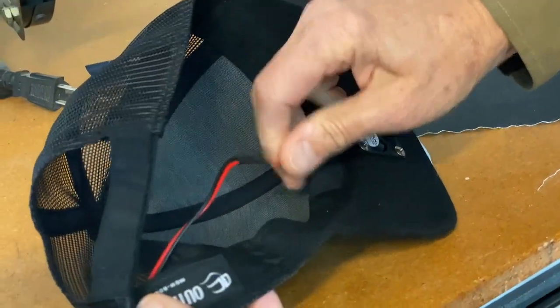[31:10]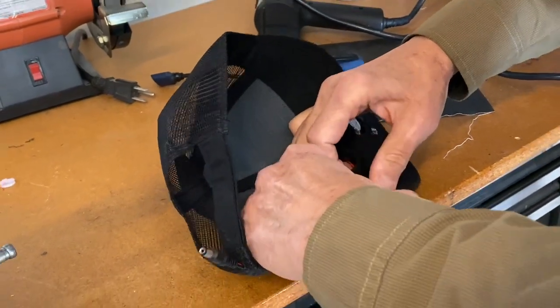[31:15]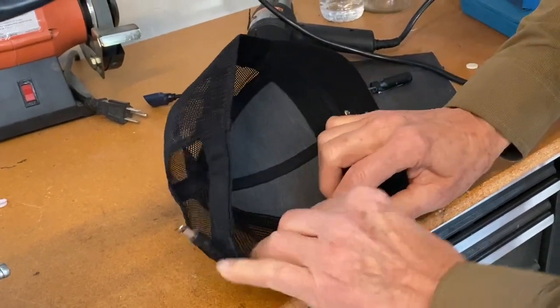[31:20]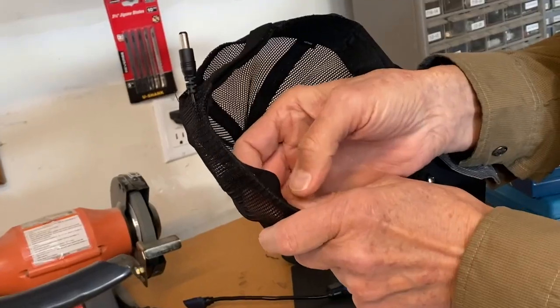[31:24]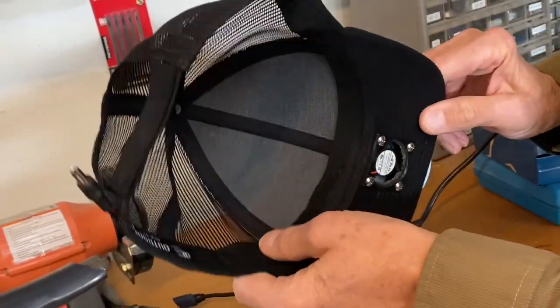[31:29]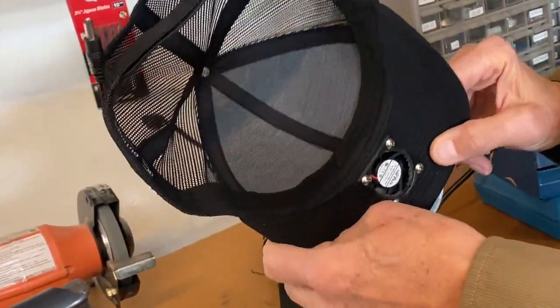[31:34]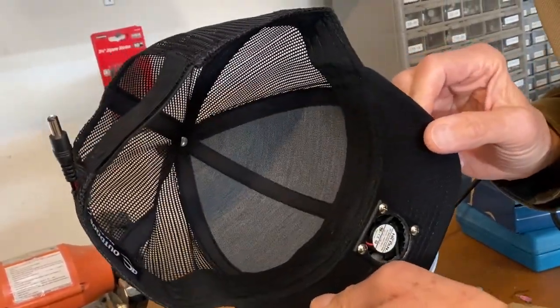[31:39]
And now these wires can just be folded underneath the hat band inside, and they should work out fine. If they kind of flip up on you, you can go in with a little needle and thread and stitch one or two connections in there to keep it from flipping up. But generally, it'll just sit in underneath there and be fine. Okay, let's stop the video here. We'll go back in, put the face shield on, and we should be all done.
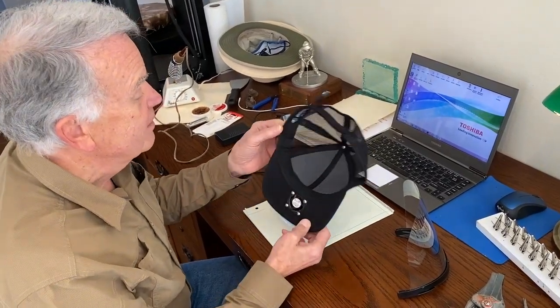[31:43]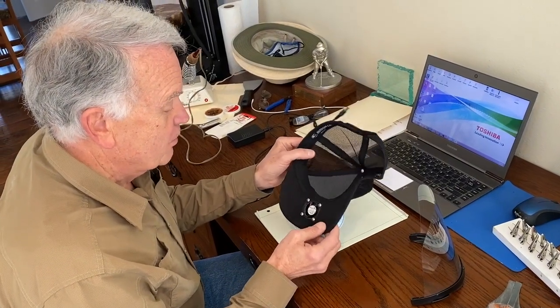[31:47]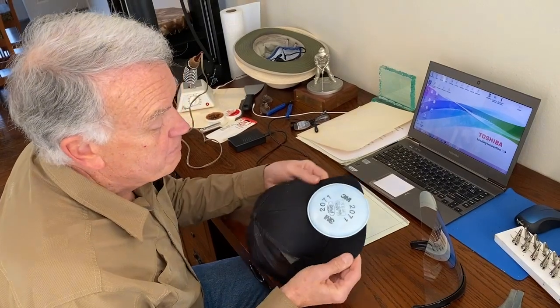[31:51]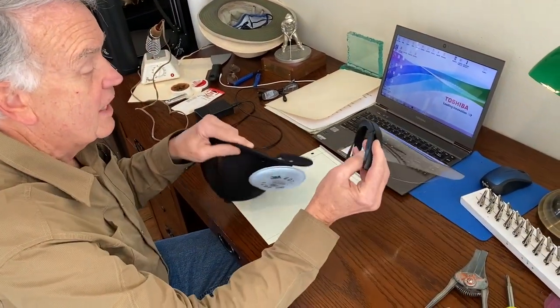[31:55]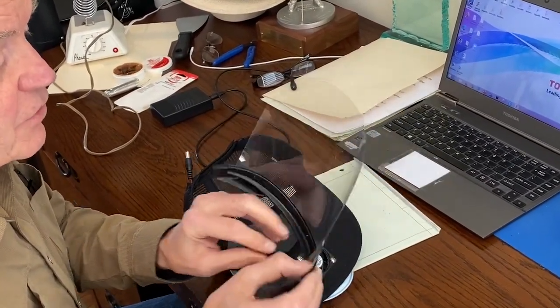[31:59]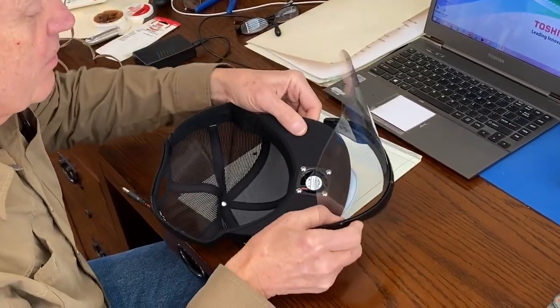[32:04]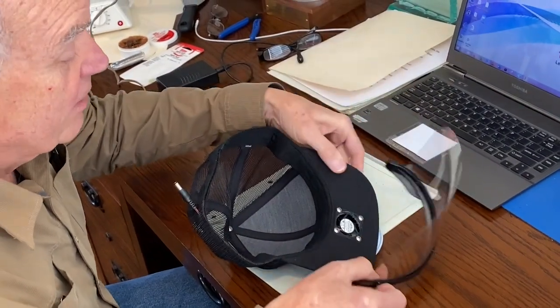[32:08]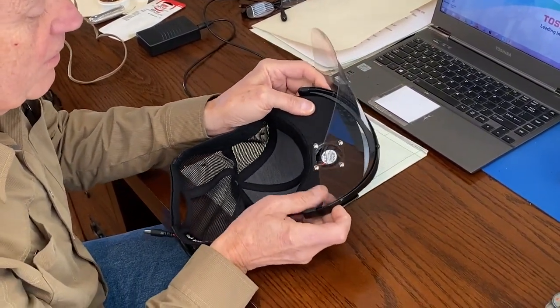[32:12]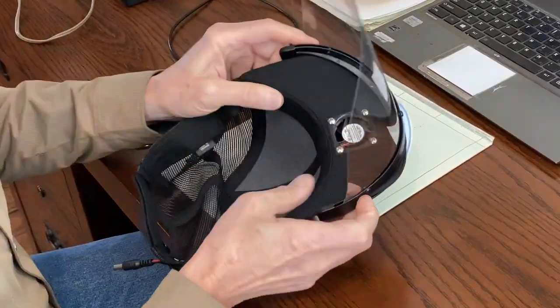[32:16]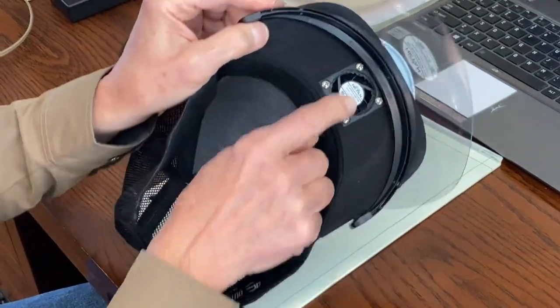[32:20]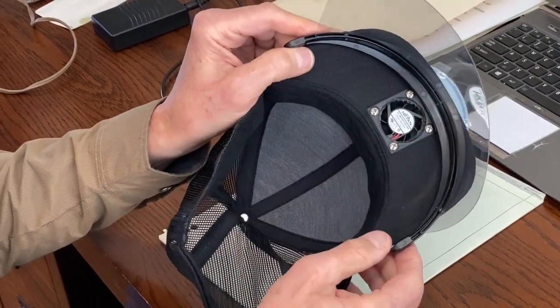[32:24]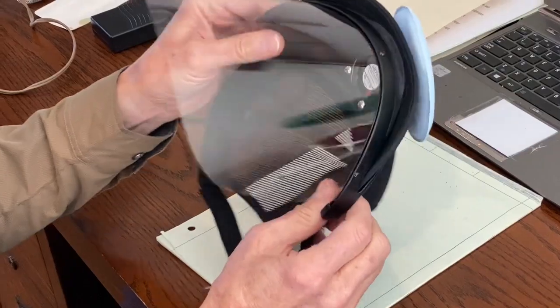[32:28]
Okay, we're almost done. We're back in here. We just got those wires connected with the heat shrink tubing on, and the hat's ready to go. At this point, really the only thing we need to do is to attach this. This is the face shield that I'm using. As I say, there are several out there, but this one attaches to the brim. It's got a couple little slots on each side, so it's a nice design. And it just slides over, and you can put that in and pull it back. I pull it back where it just gets close, so you've got the air as close to your face as you can get it, but still allowing some air to come in.
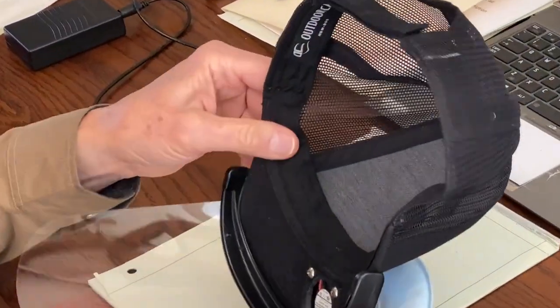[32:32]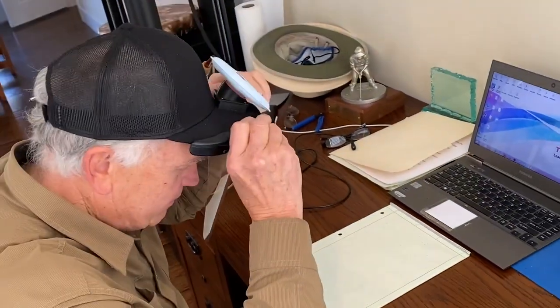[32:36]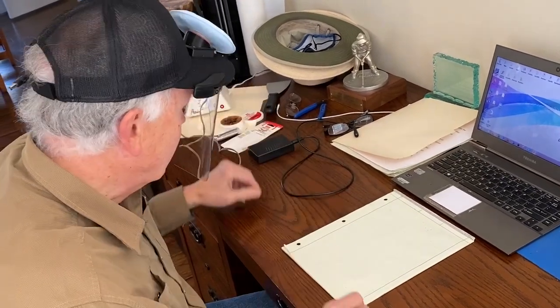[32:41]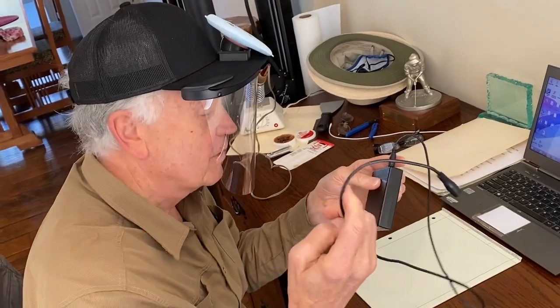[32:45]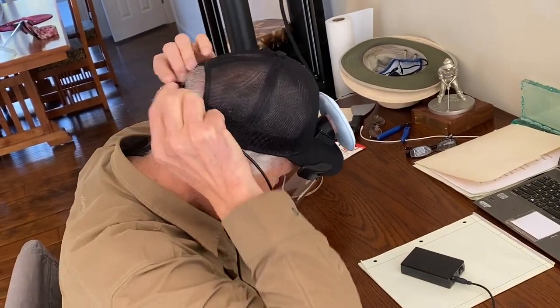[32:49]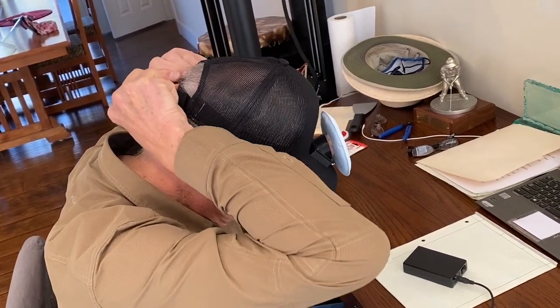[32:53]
And now we're ready to give it a try. So I'll take and put on the hat. Not too tight, and we have our cable that we had before and our power pack. So I'll reach back and plug that in and turn on the power pack, and it works just fine.
So once again, we've got a real light design that will allow you to keep air flowing, protecting your eyes, and give you fresh air to breathe, clean air to breathe, and hopefully that helps keep us a little safer, not 100% safe, but safer from all this COVID virus that's going around.
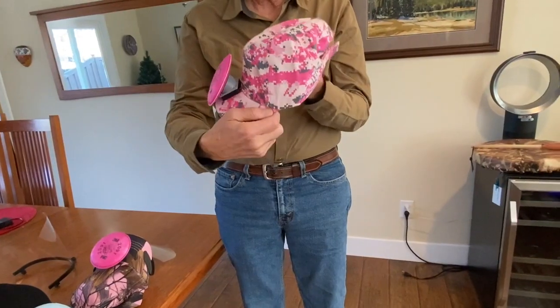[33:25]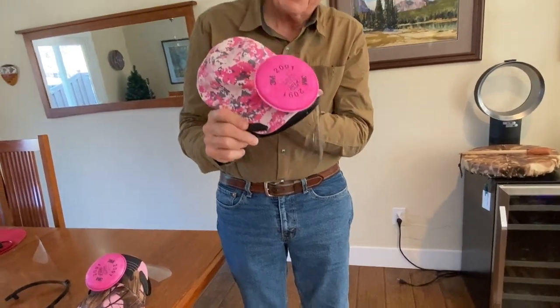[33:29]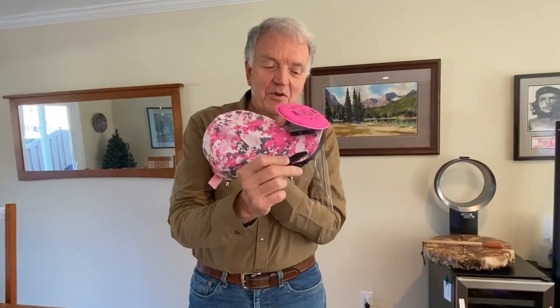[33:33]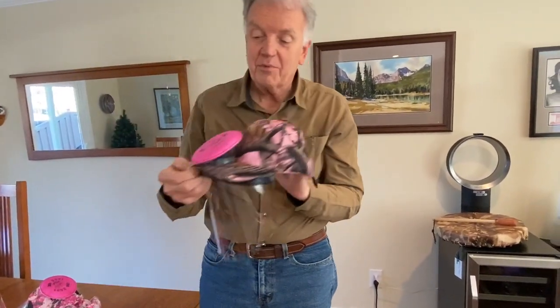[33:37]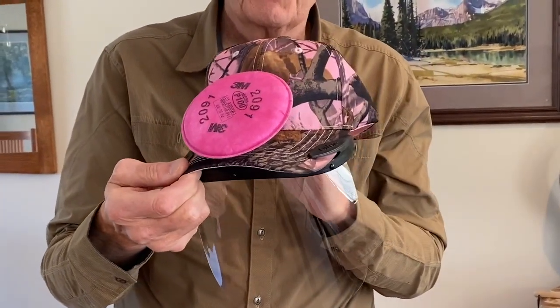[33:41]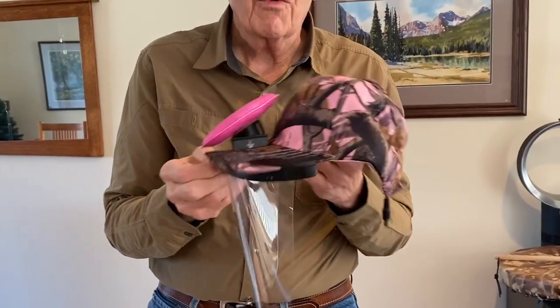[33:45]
Before I end, I'll show you another hat. This is the hat that my wife has, kind of likes the pink and the pink camo, and here's another example of another camo and some pink. So you can choose any hat that you like, but they all work just fine.